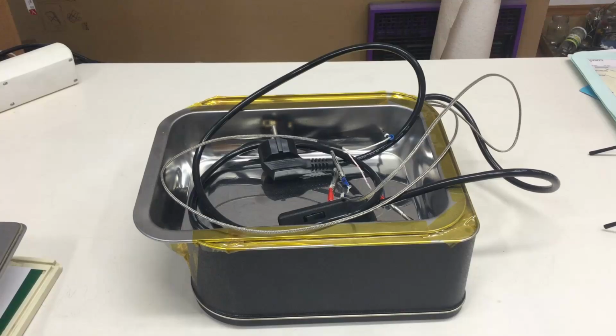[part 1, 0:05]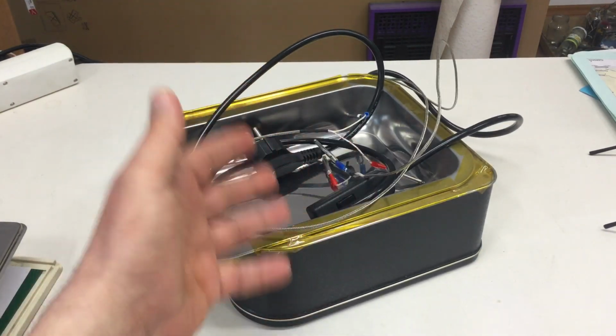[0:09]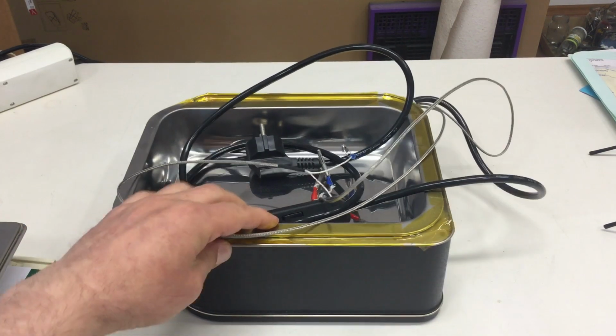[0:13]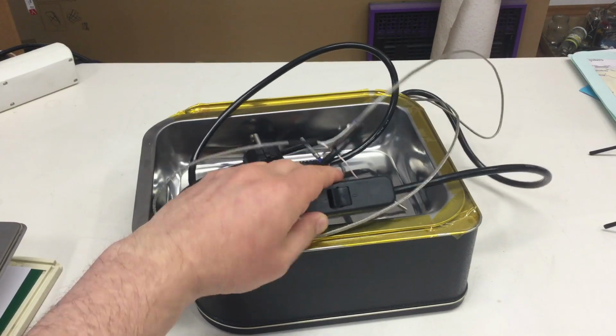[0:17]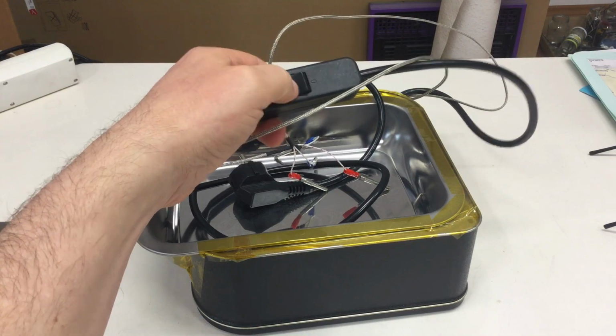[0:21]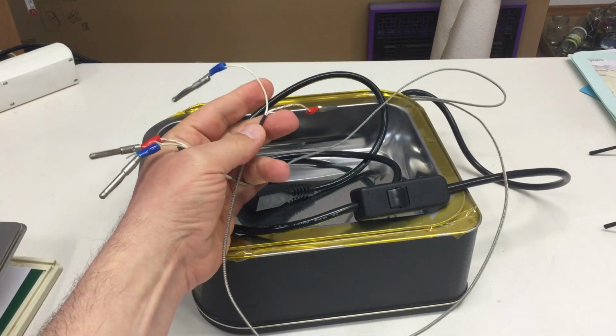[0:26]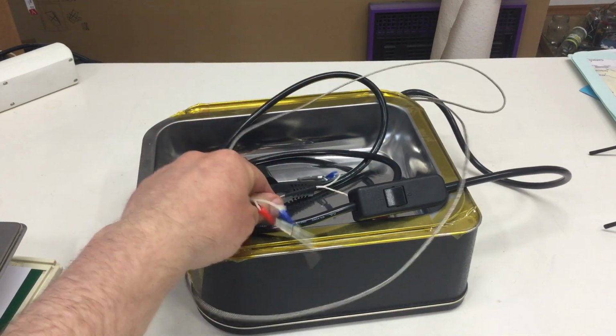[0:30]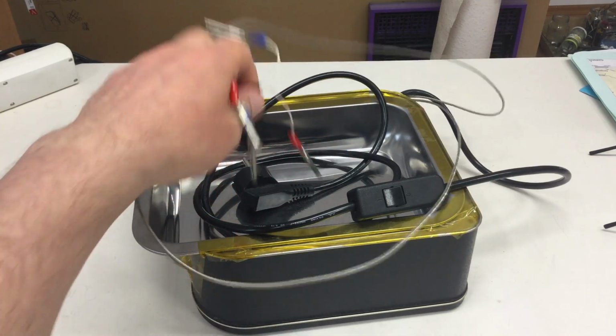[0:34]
I assume you still remember that thing, or you have seen it often enough: the prototype of my laboratory water bath, which I use for etching PCBs. So yeah, precision temperature control and precision temperature measurement with two thermocouples. I used my multimeter to do the temperature measurements.
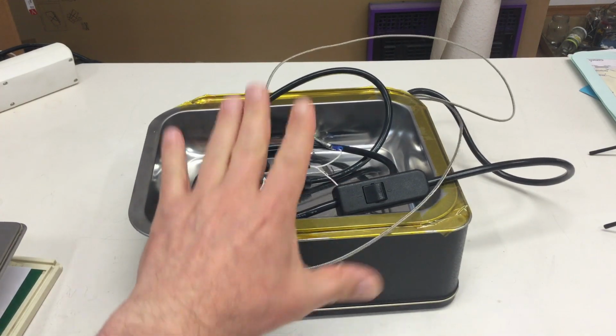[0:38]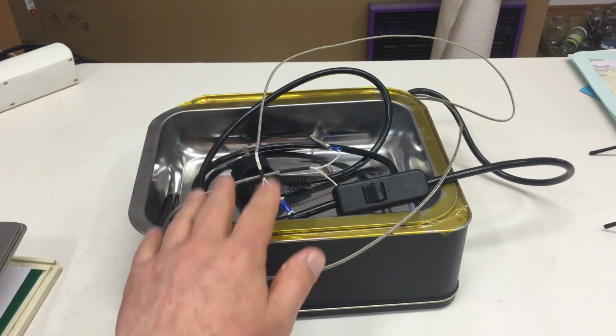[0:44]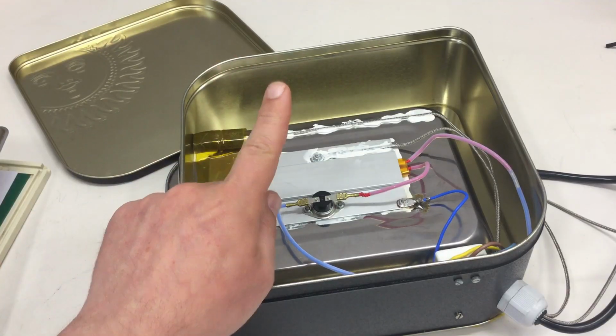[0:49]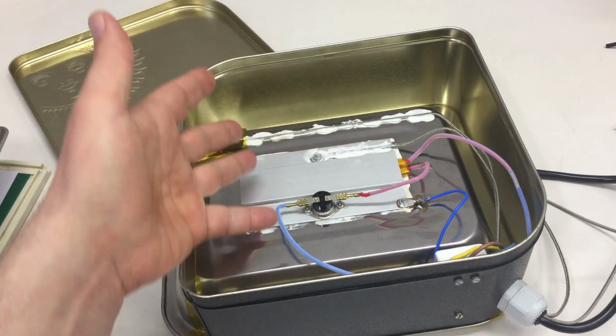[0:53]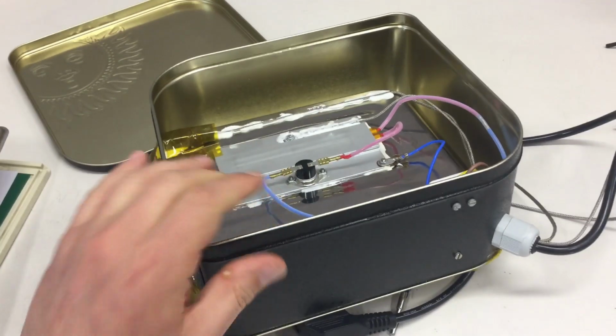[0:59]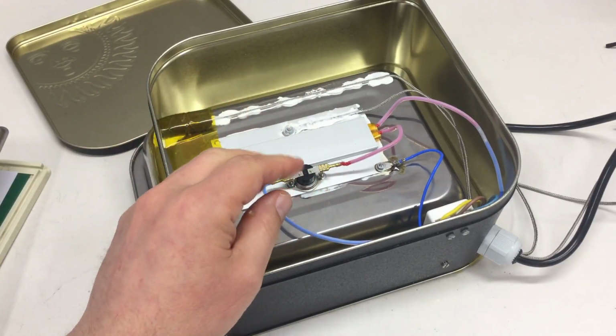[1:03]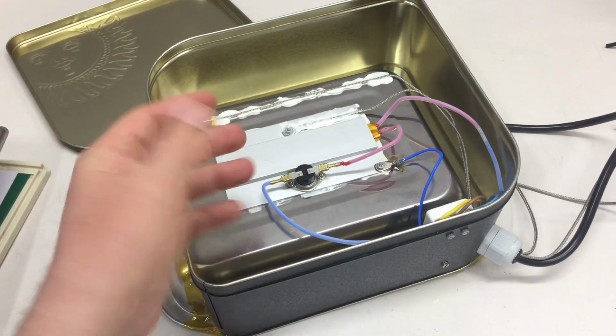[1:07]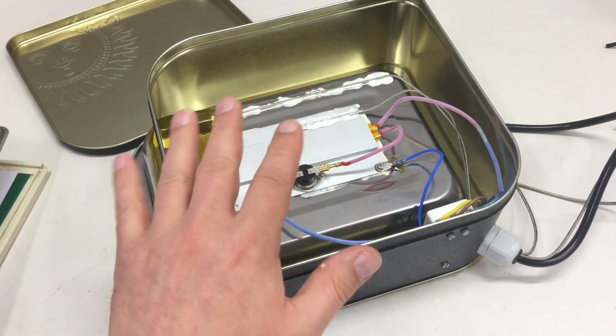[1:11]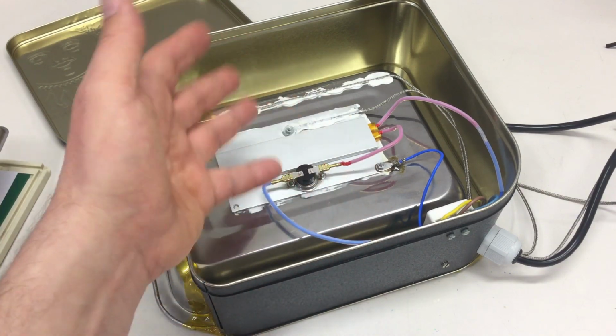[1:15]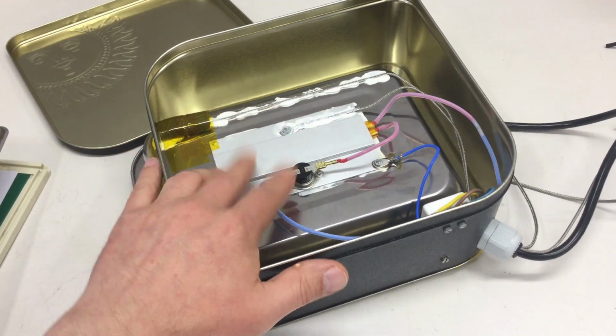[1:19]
Anyway, I used that for a while and it works fine, but I learned a lot of things about it, or at least two things. First, if you run that thing as it's supposed to be run, that is with water in it, the temperature of the heating element and the sensors never goes far beyond 100 degrees Celsius. If I'm just etching stuff and my target temperature is 45 degrees Celsius, they never go up to 60 at most, the one here on the heating element.
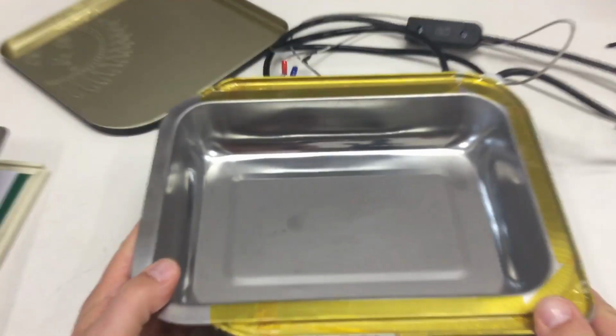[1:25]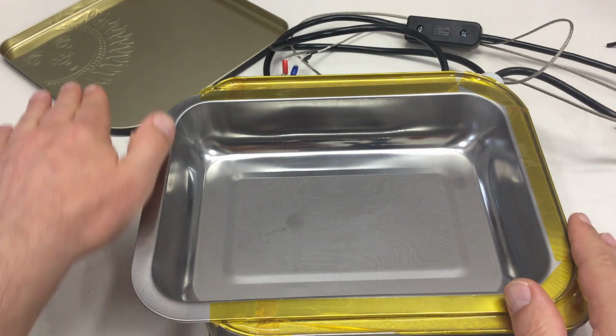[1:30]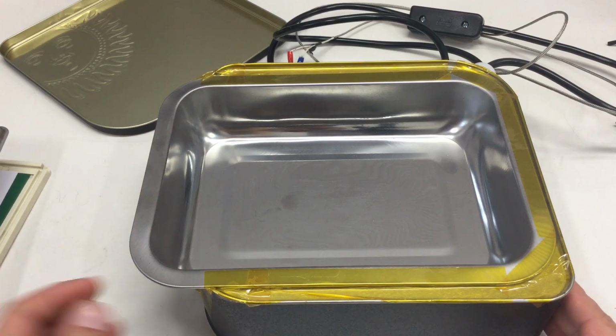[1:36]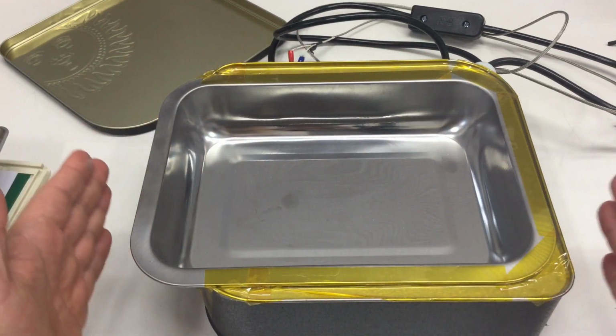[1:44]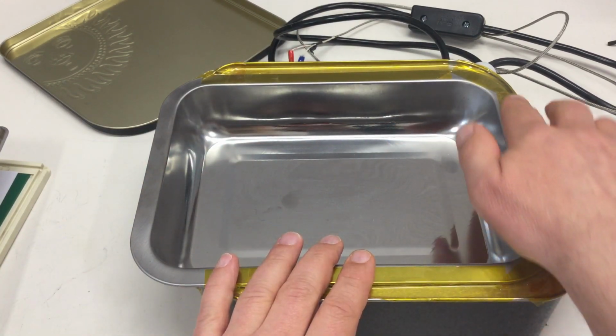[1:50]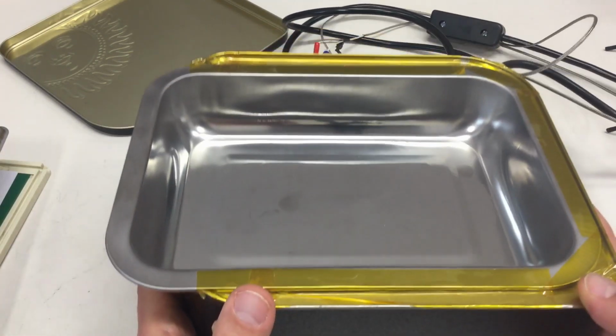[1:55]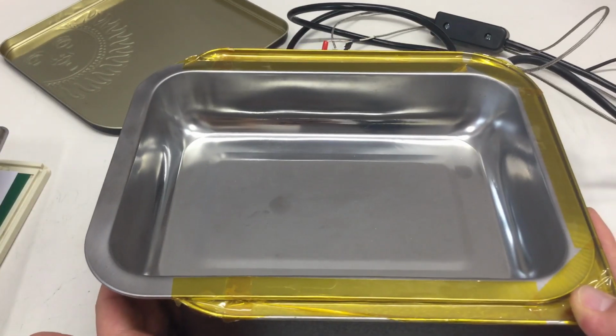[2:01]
Second, for some applications I have in mind, this is a little bit too small, so I want it to be a wee bit larger. And there's a third point. I absolutely want the side here overhanging over the case on all sides. I do not want it to be embedded in any case, because it's so easy to take it over to the sink and at least on that side simply pour it out.
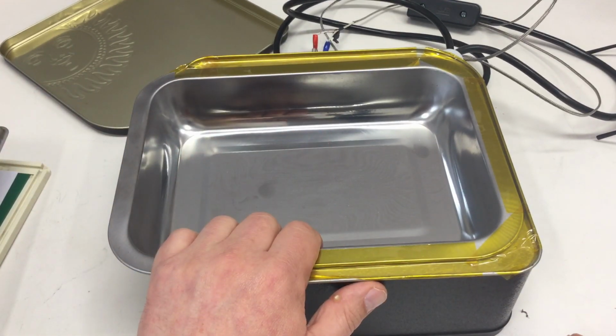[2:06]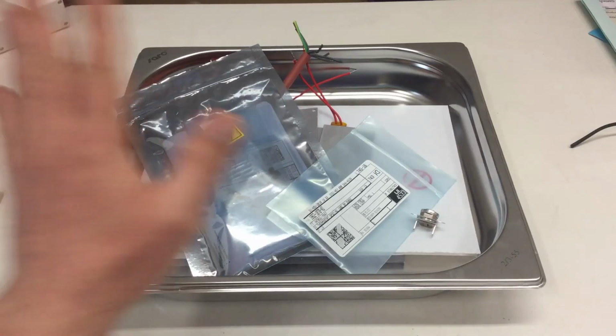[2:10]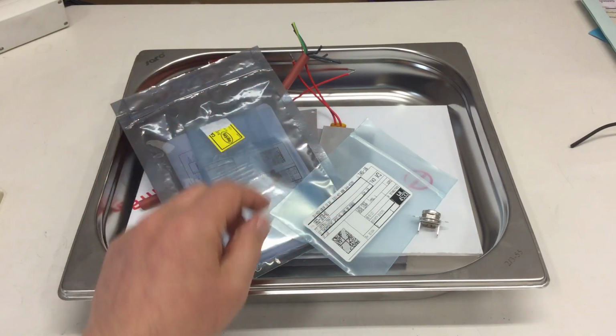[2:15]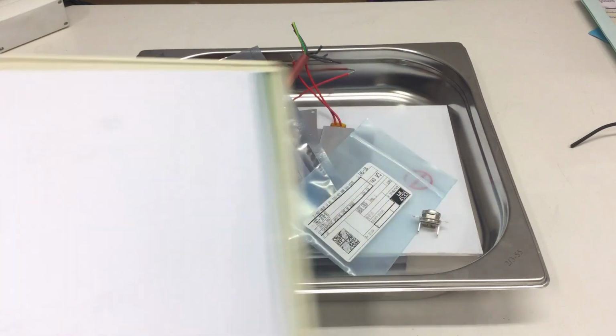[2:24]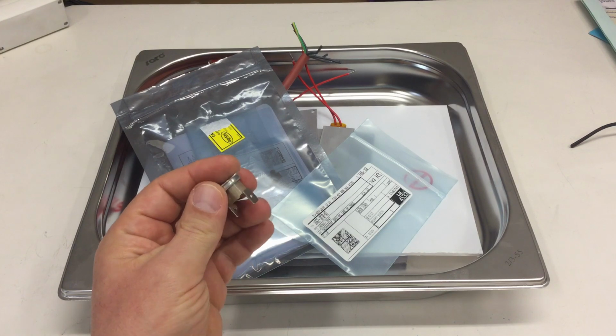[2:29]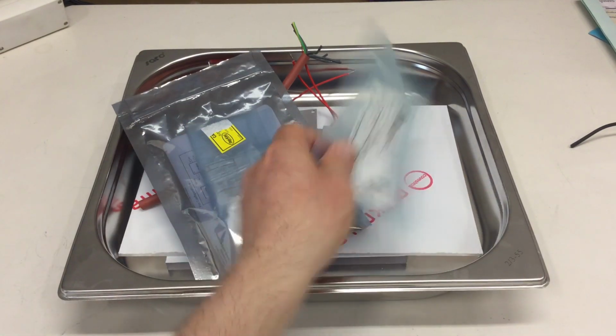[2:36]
So the prototype was well worth it, but now it's time to do the real thing. And I have the parts for it, at least for the hot and wet end. The regulator stuff and display stuff is still in the post. And I have a plan, okay? So, my emergency temperature cutoff will now be of a 120 degrees C type.
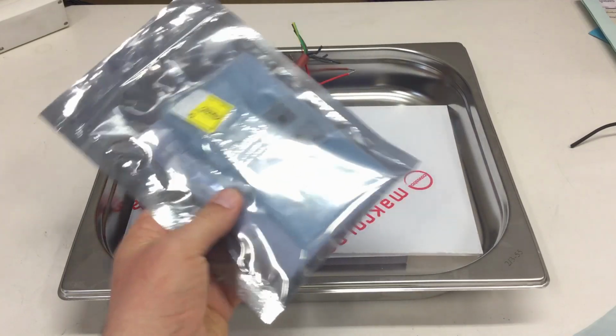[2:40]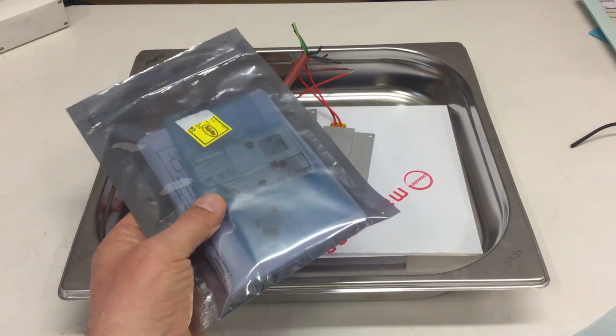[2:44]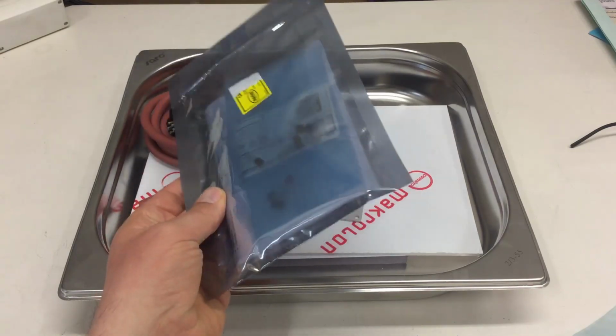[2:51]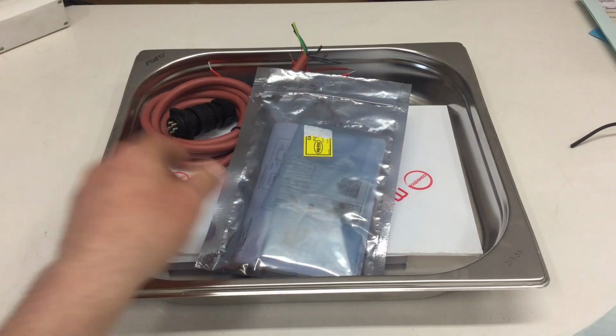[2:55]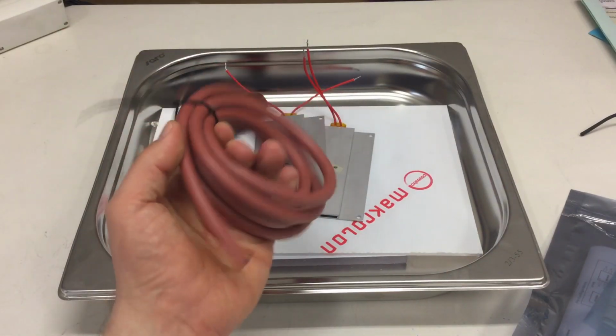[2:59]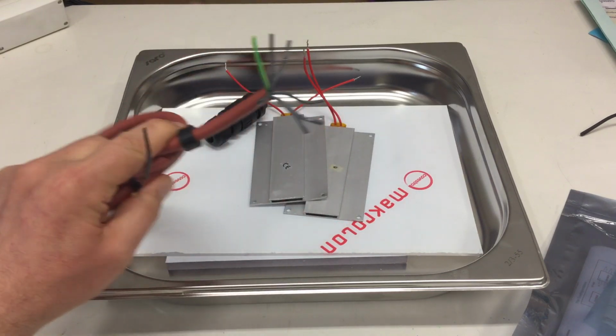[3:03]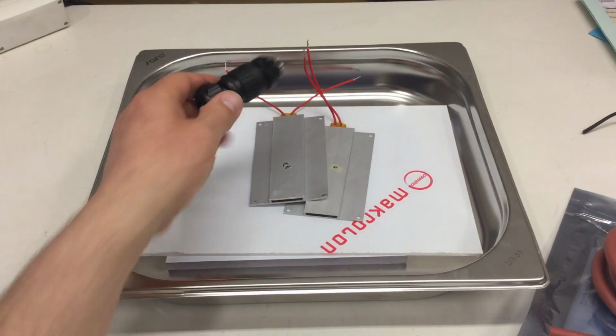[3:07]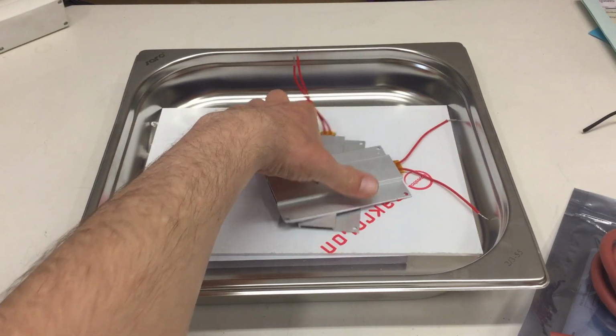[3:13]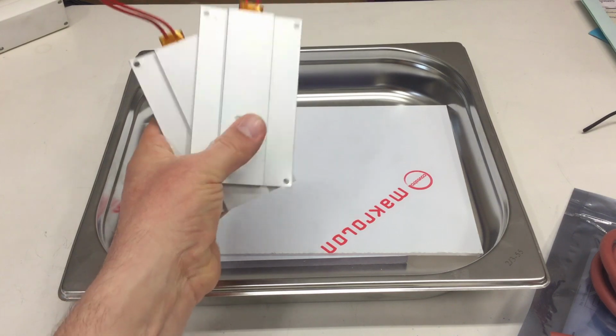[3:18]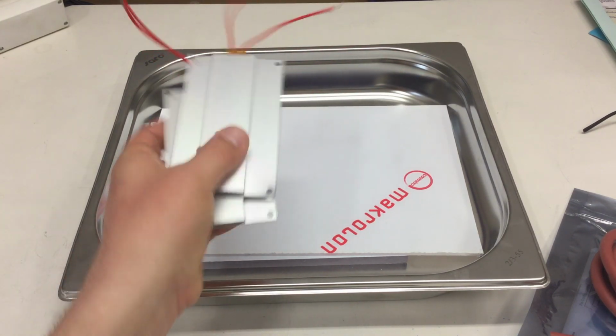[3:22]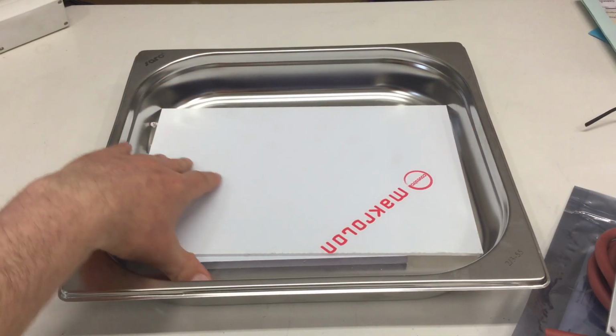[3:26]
The sensors for measuring the temperature of the basin and the temperature of the heating element will now be DS18B20s. I've made a lot of videos about them, card link. And a nice high temperature silicone cable with a lot of wires in it. A watertight connector. Of course, this thing is bigger, so twice as big. So we need two heating elements because we don't want to wait too long for the water to heat up.
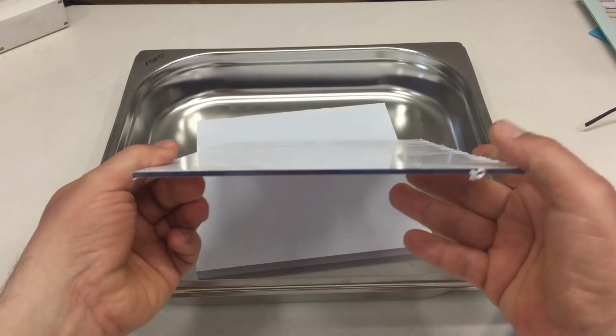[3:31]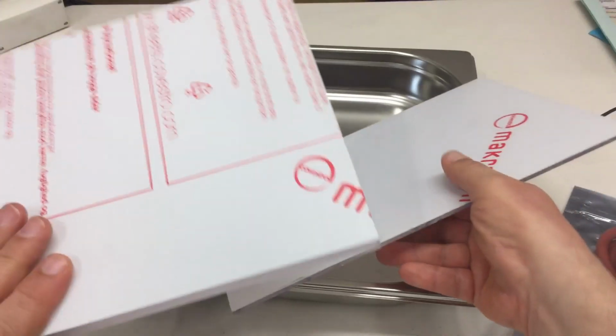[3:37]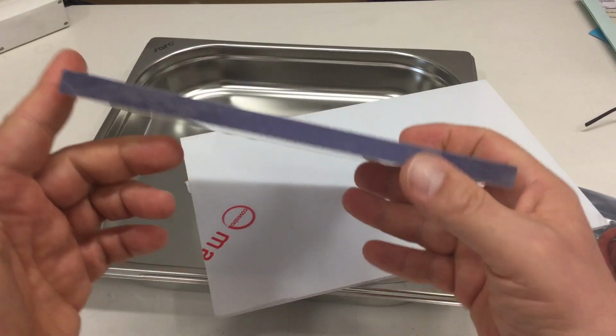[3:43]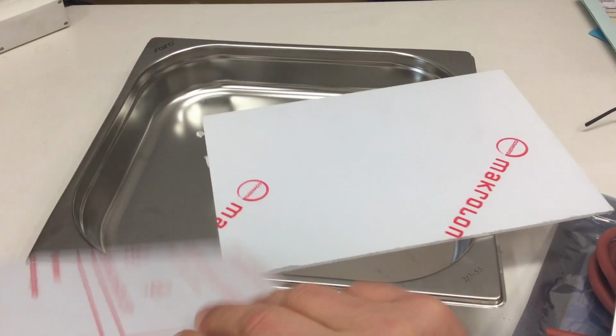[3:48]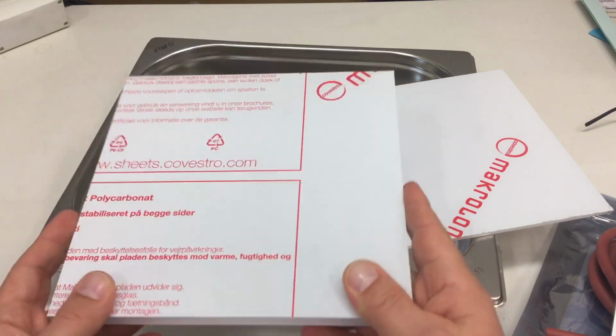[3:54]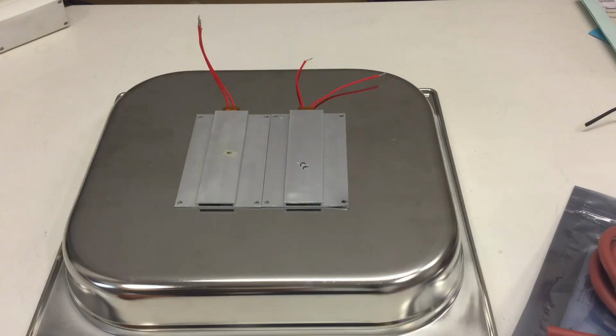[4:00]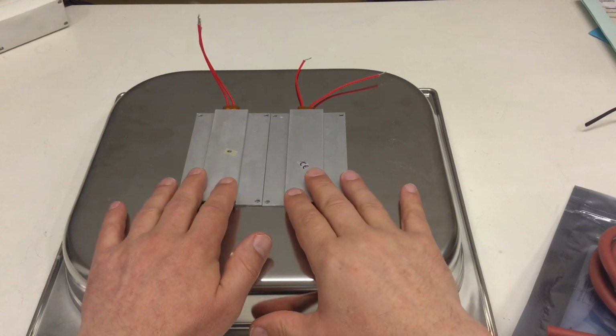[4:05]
And I have here this 3mm Makrolon or polycarbonate sheet, and that's good. Well, it's transparent, that was the cheapest, it's not white, this is just some foil on it, but that is also good up to 125 degrees Celsius. And the reason I have that is the heating elements and the sensors all go on the back, of course, and I needed a case.
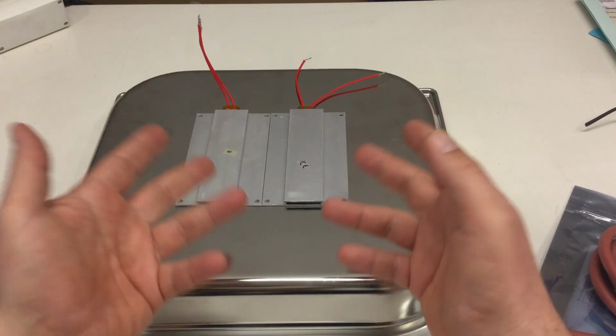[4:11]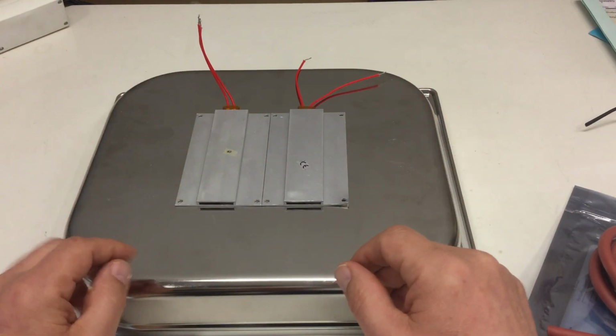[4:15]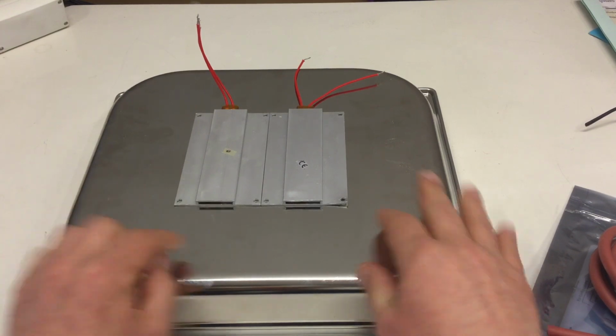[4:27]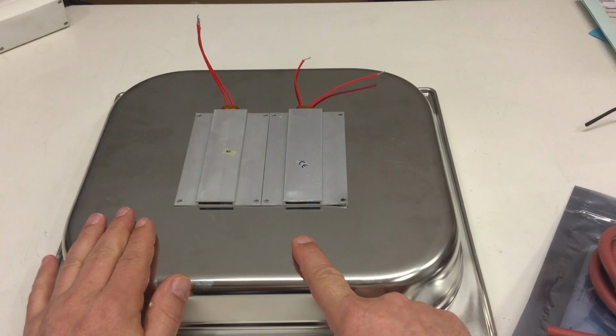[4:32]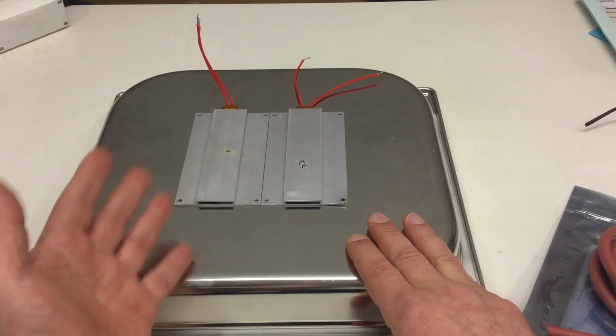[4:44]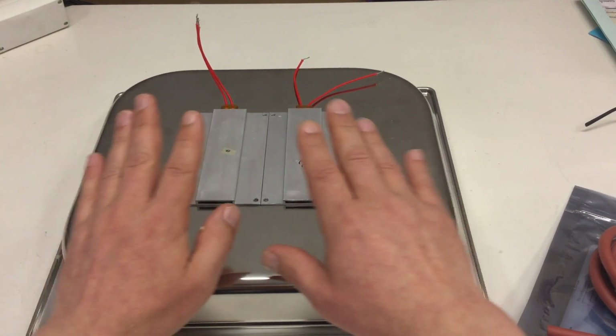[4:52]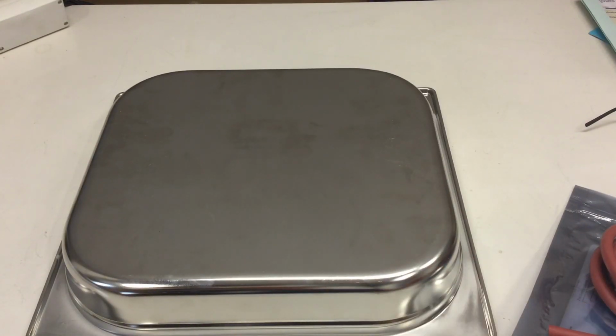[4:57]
My first idea was simply to buy a case and take one half, glue it somehow on, but I ran into problems. I only got cases which had the right size but were far too high, or I got cases which had almost the right size but were of ABS plastic or something like that, which doesn't withstand temperatures up to 125 degrees C, or not even, you shouldn't use it even up to 100 degrees C. So that was out of the question. Buying a case, that is.
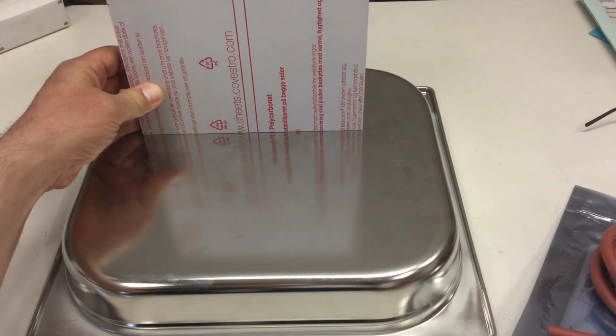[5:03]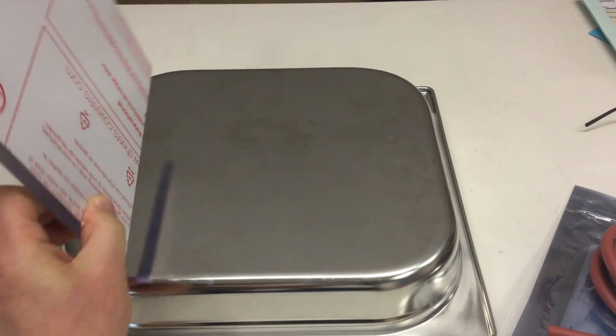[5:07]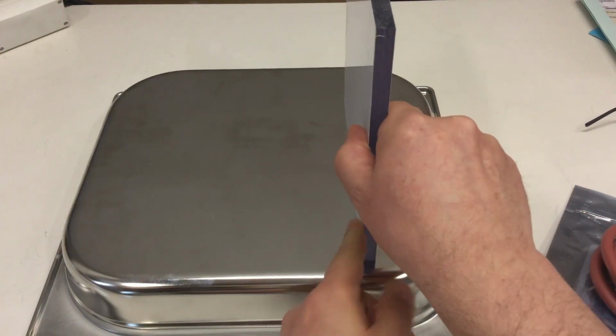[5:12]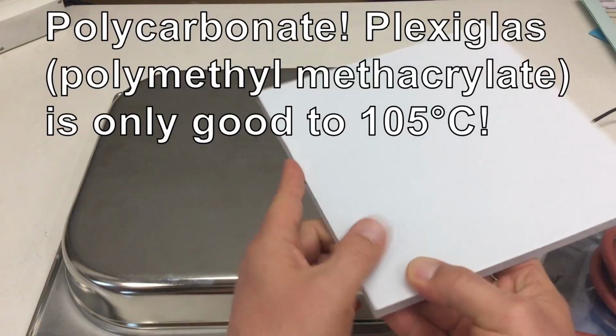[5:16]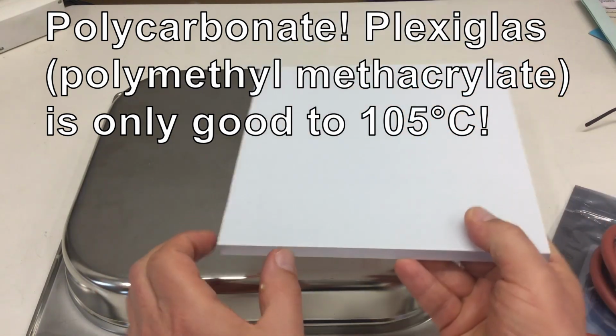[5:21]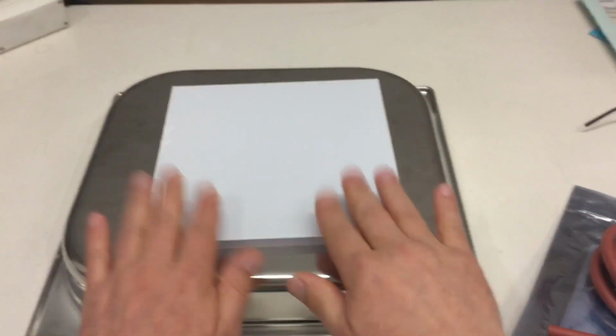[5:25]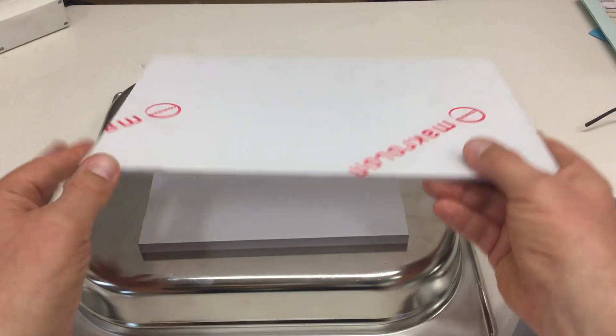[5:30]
So now the idea is to have 20 centimeter by 22 centimeter walls going up here, made out of that stuff, plexiglass or whatever. And obviously not that high, just about 4 centimeters. We have a look at the plan. And then cover it up with a 3 millimeter sheet of that stuff.
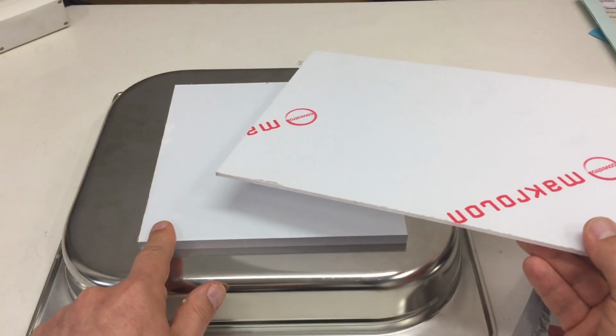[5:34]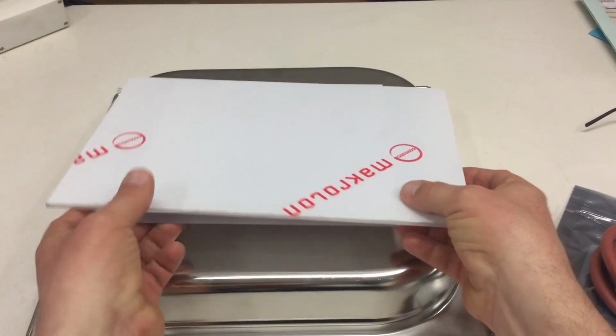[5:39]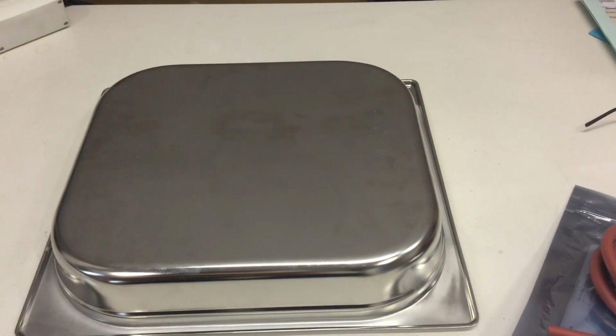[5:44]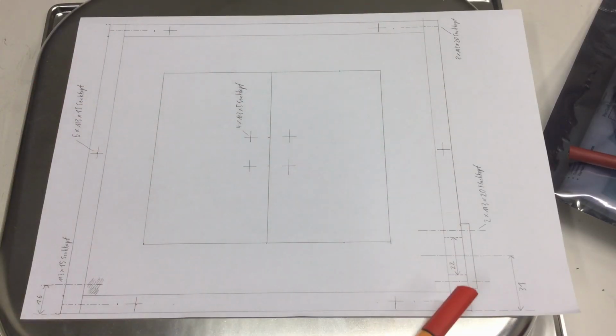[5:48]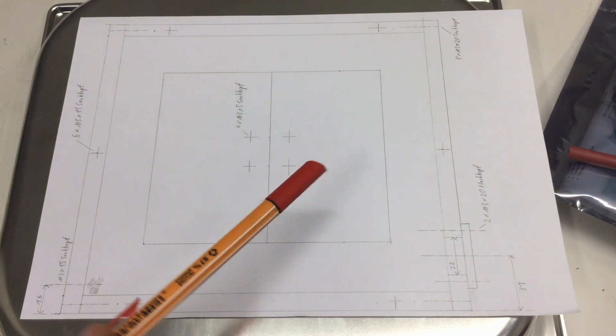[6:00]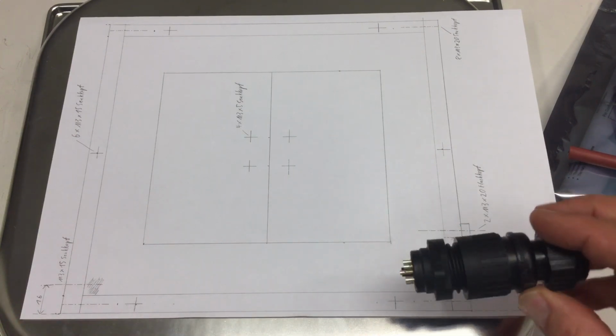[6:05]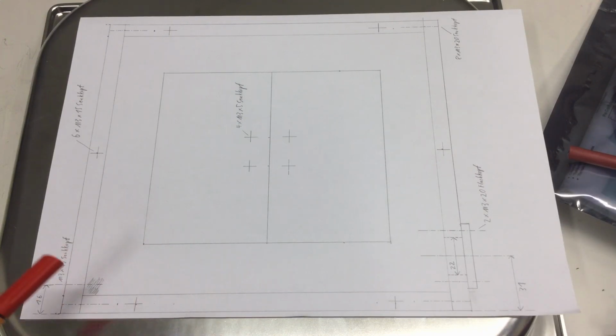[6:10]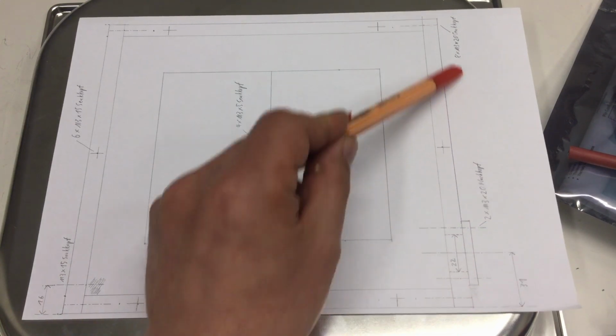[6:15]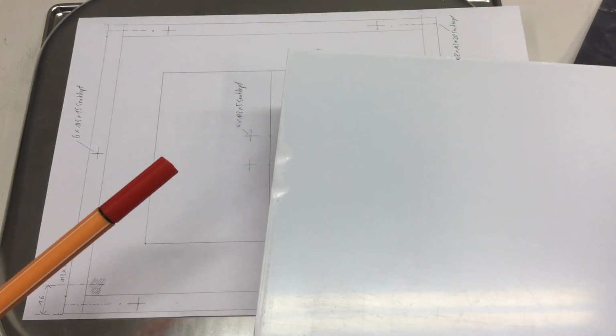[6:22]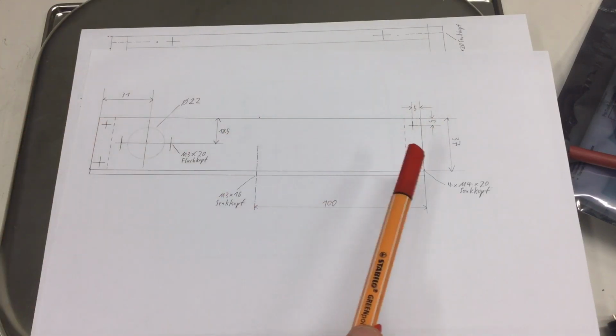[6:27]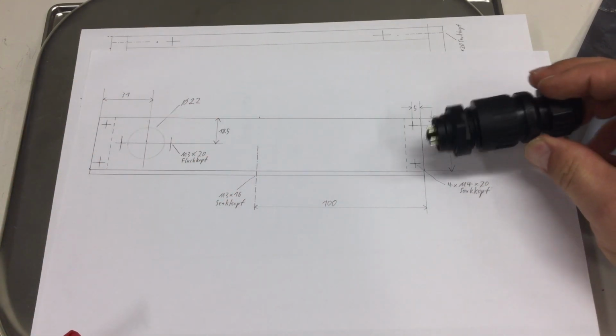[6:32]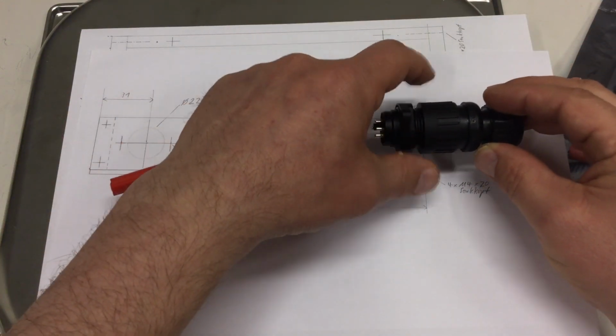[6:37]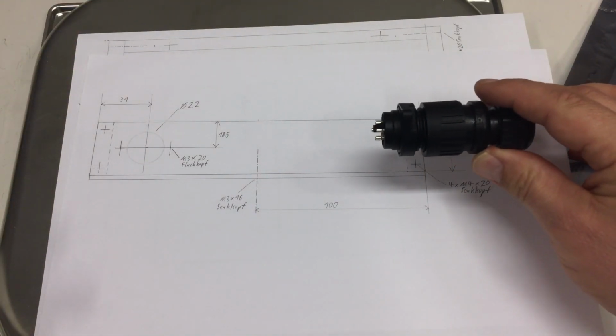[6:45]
Okay, first I will have to saw that plate here, the 10 millimeter plate, into pieces. And the pieces should be 37 millimeters wide. This will give me, when that thing here is basically in, 5 millimeter wiggle room to the top and the bottom. So nothing will bind up when you plug it in actually.
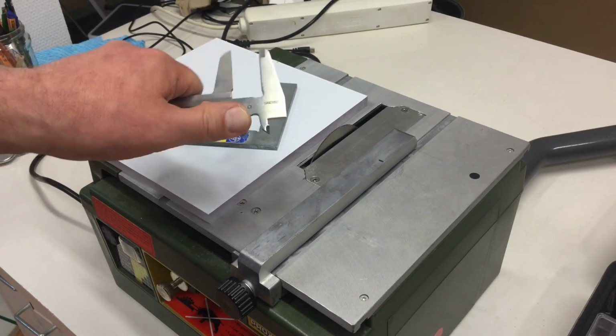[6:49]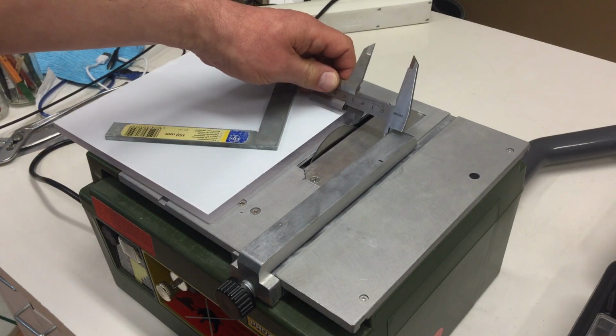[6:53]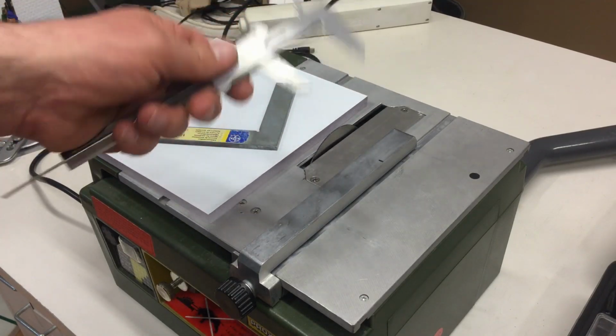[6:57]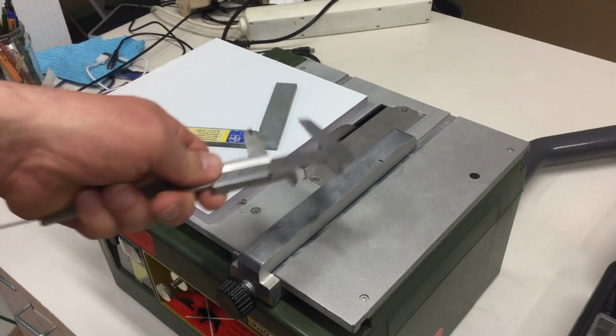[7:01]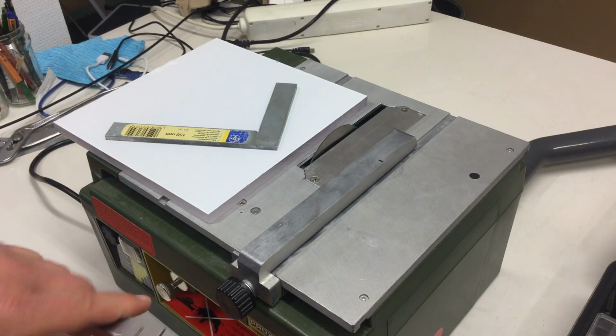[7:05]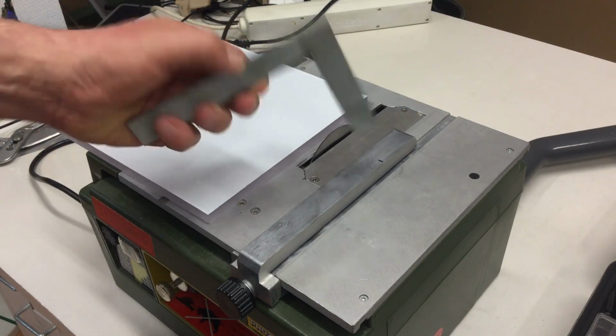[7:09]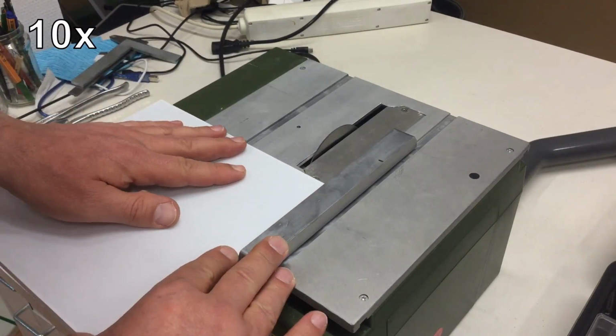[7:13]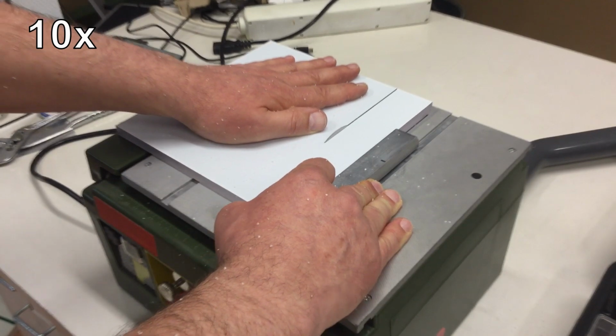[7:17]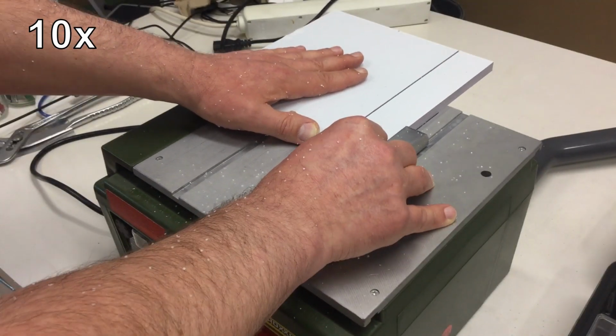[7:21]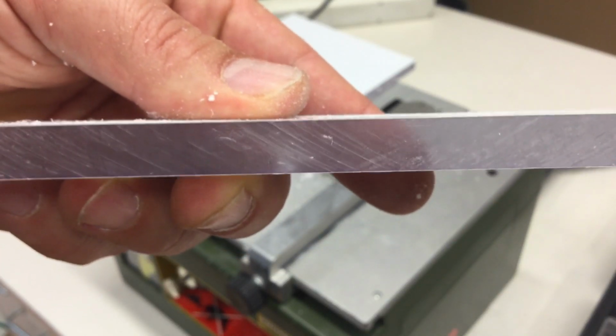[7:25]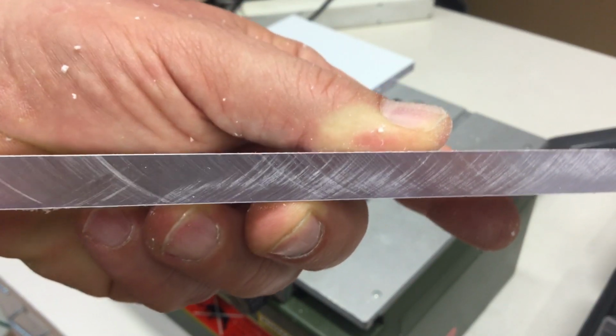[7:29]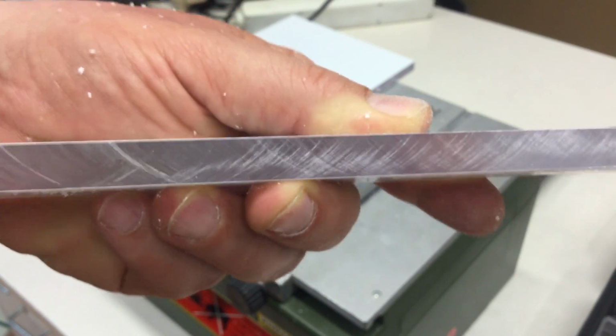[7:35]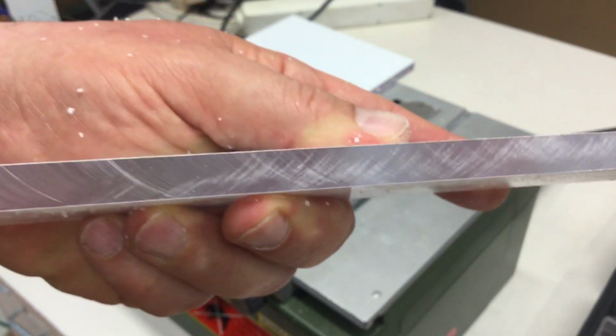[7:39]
Let's get started. I measured 37.2 between the saw blade and the fence at 2 points, and these 0.2 millimeters are just insurance for my own inability to make straight cuts. But I also checked that my fence and my blade and everything is at a right angle. So let's rock and roll. That's the cut from the factory, and that's my first cut. Not too bad. I could let the blade run a little bit slower, but I won't change anything now because I need 4 identical pieces.
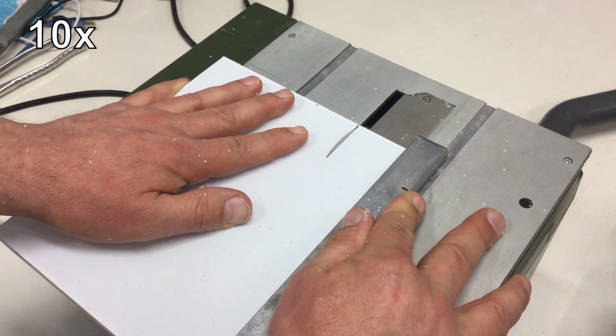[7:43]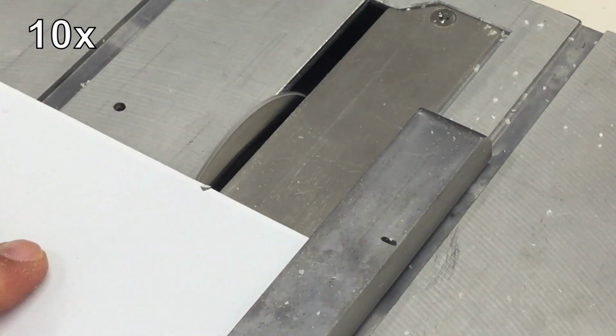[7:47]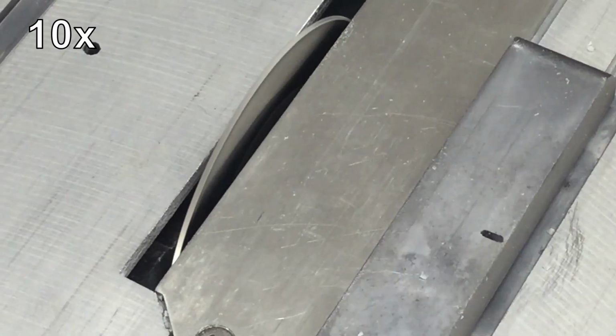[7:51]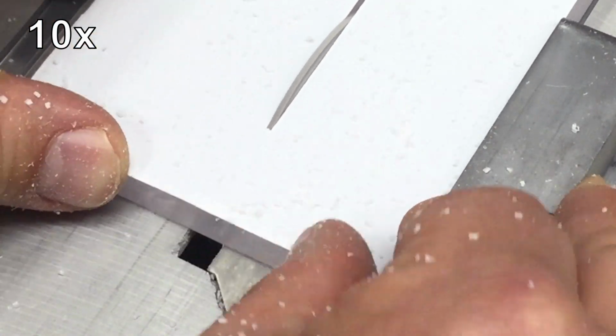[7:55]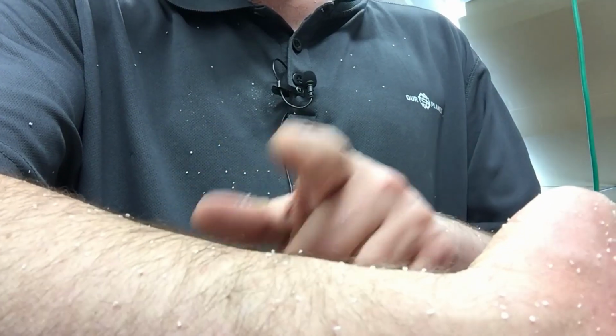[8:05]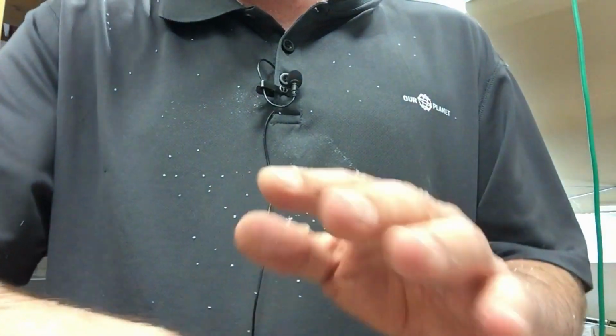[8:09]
Yeah, I'm full of that stuff now, and would you believe, these particles, when they come off the saw, flying off the saw, they are actually hot. I mean, not burning hot, but yeah, uncomfortably hot. Yeah, anyway, let's
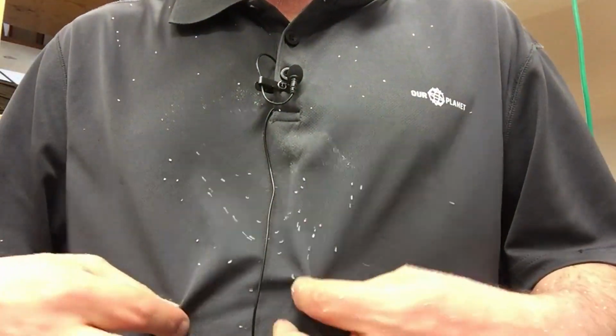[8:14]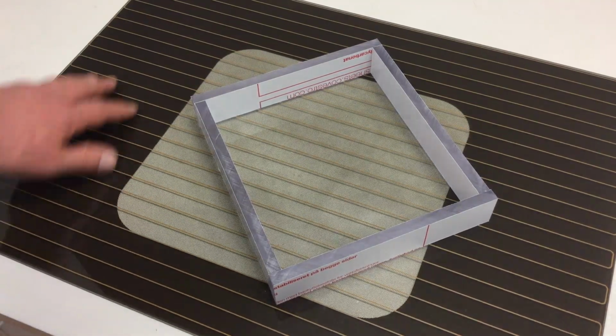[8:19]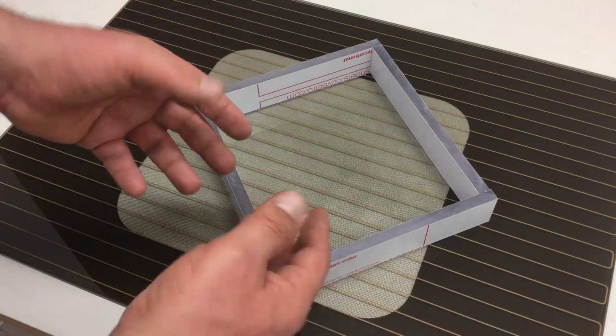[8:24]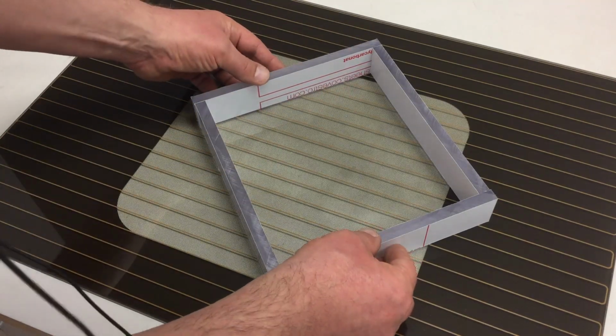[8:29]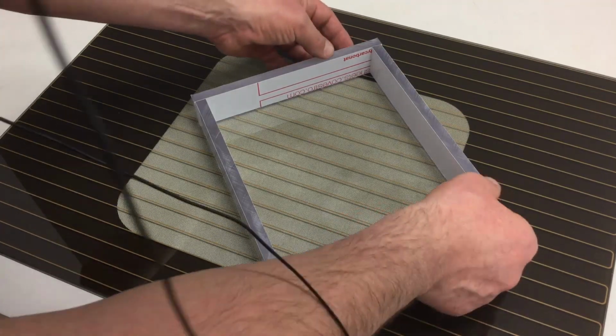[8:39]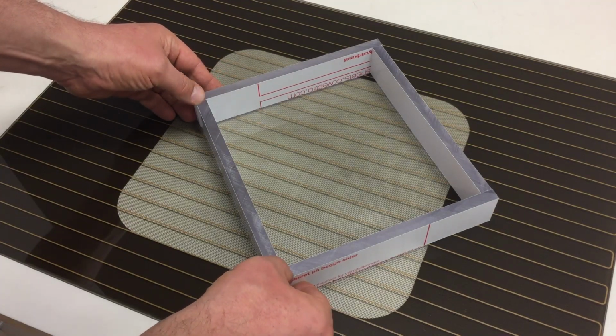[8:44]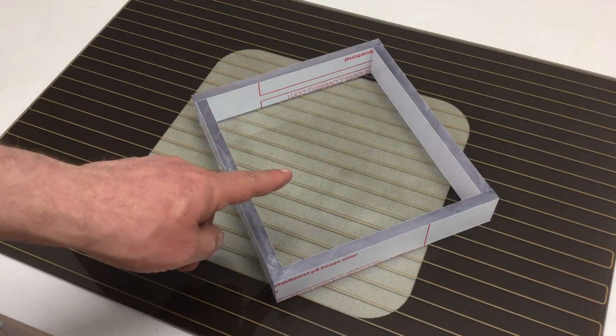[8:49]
clean up. This glass plate here is the flattest surface I have, and if you search for something flatter, you're on the wrong channel, obviously. For now. And yeah, it turned out, well, I wouldn't say perfect, but yeah, this is absolutely smooth. Okay, next step.
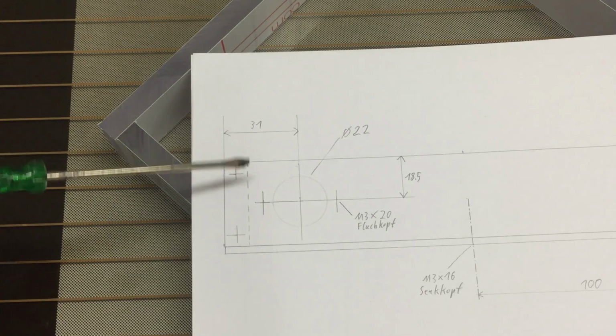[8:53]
Yeah, I had a plan. Where is it? Yeah, I need 2 holes going in here, and then in the inner part tapped for M3. And yeah, in addition, I will add some glue when I put everything together. But I wanted to have here some nice positive connection, yeah, within the 4 parts of the frame. So yeah, let me think about a setup, because I want to drill the holes in one go, if possible.
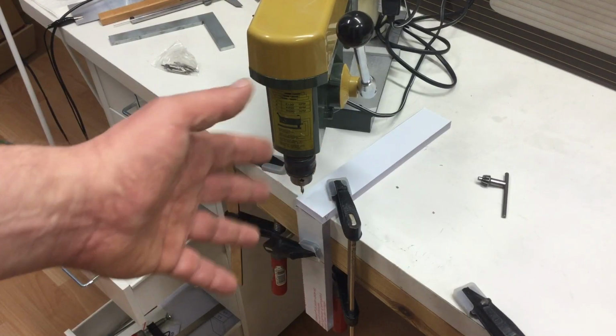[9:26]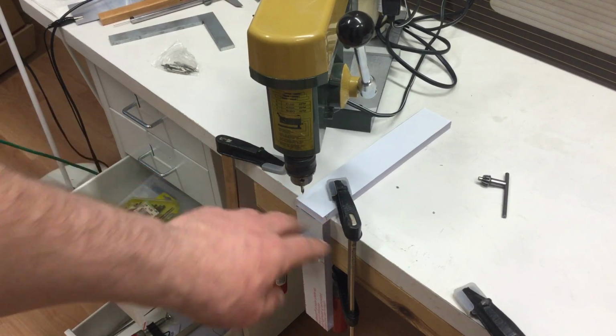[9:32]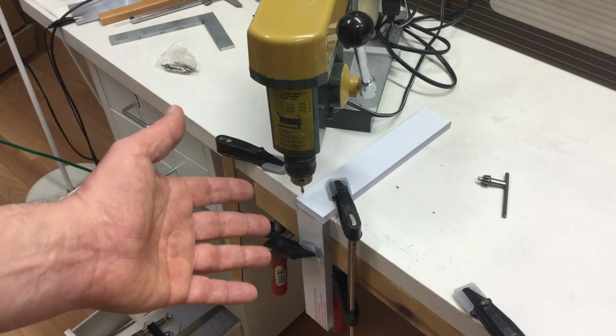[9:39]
I spent the better half of an hour to come up with this contraption to align them here in all 3 dimensions to a right angle, and I hope, yeah, it will work out. Wish me luck.
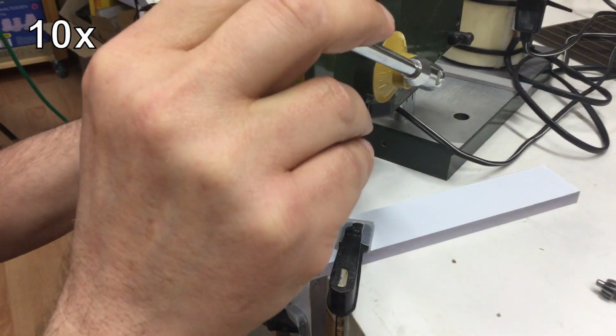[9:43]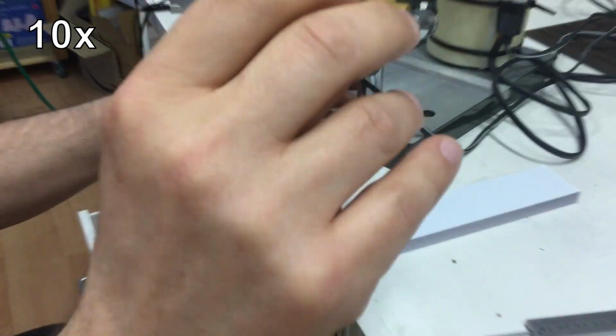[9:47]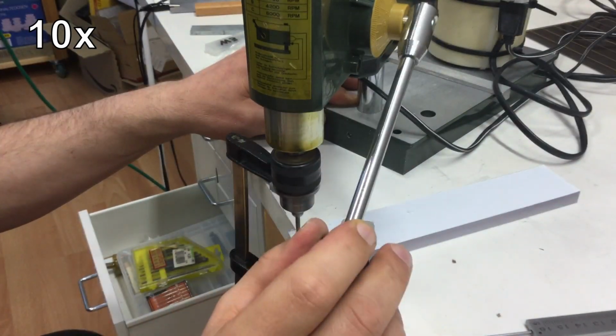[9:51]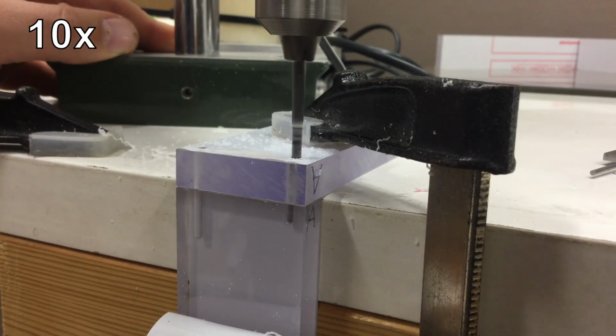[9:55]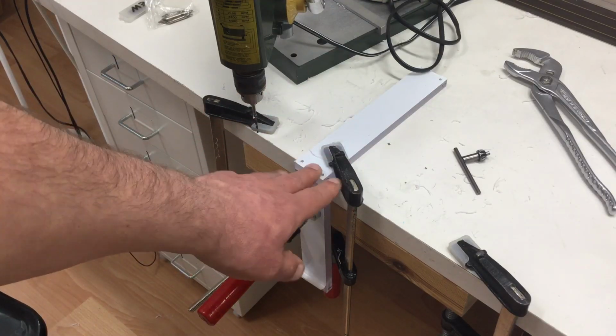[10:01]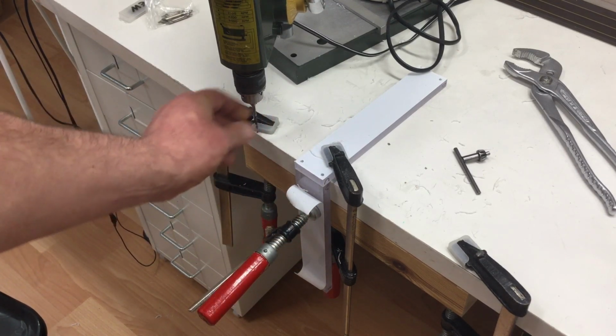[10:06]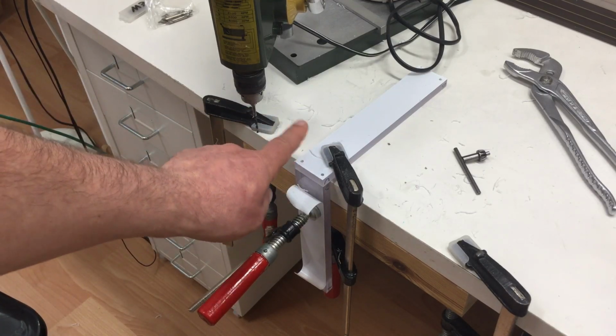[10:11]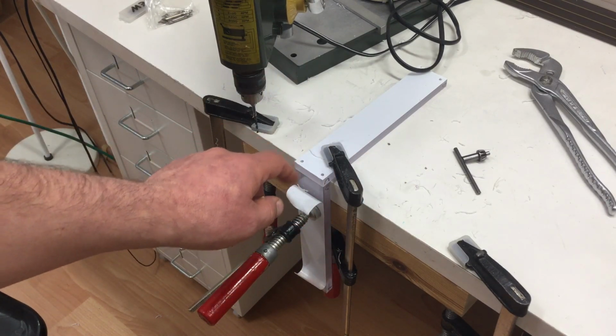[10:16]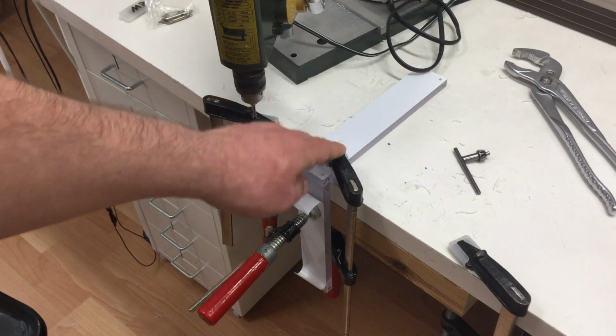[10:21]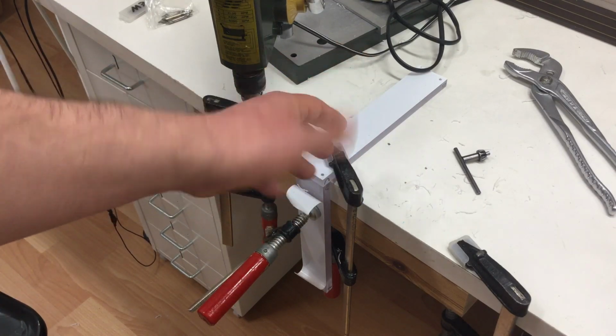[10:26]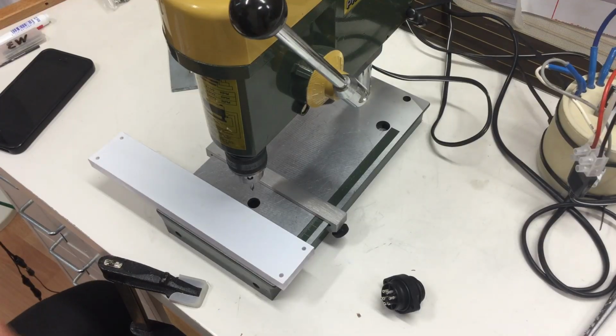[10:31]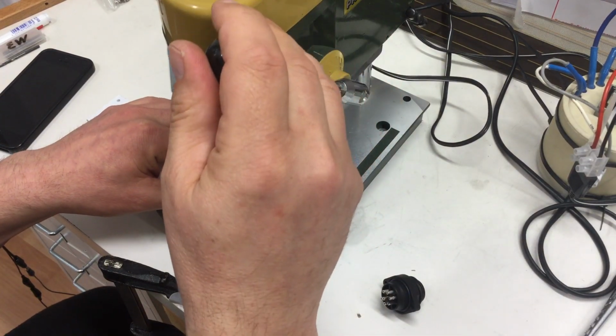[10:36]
All 8 holes on all 4 sides are done, and yeah, initially I drilled now with a drill bit for, yeah, M3 thread core, so I have to widen the outer holes to 3 millimeters and, yeah, countersink them, and we need to add the big holes here, or yeah, one big hole for the connector and maybe some more holes for other stuff. Let's continue. Let's try the big hole for the connector next.
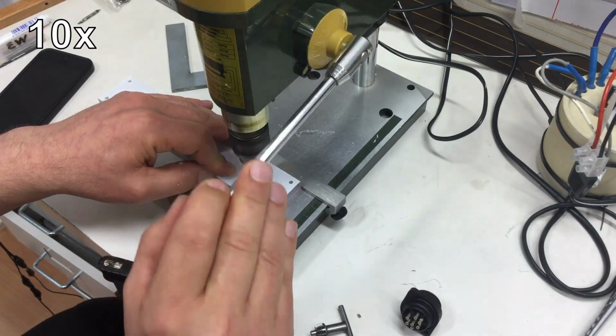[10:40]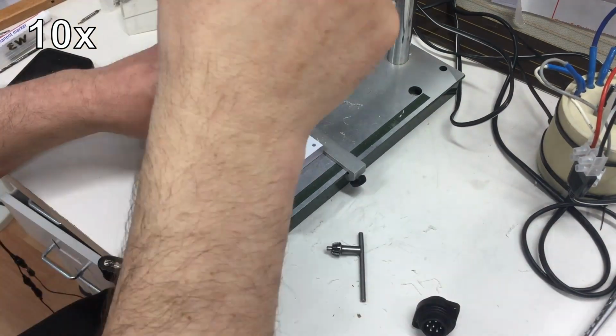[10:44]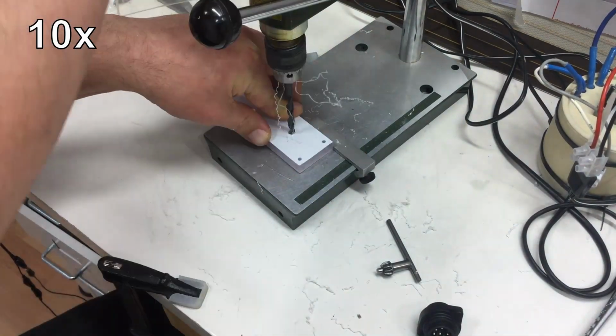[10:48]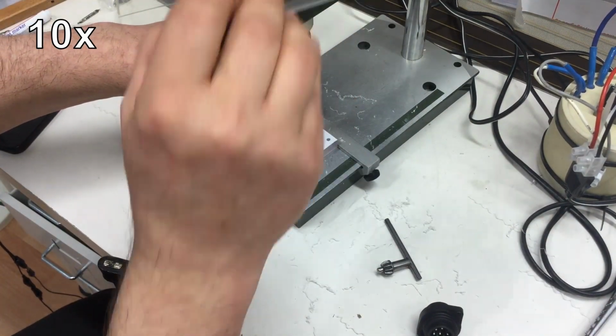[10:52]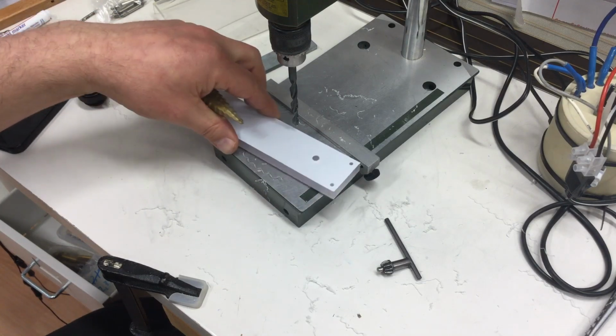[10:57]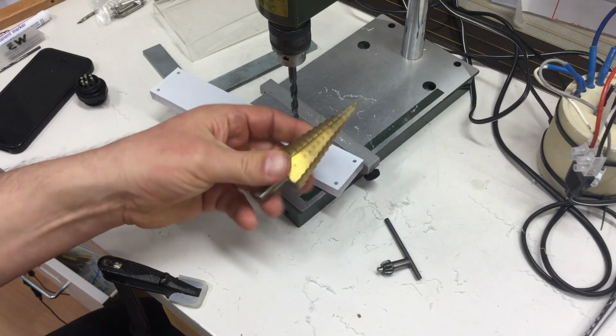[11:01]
I worked up my way to 6 millimeters, and that's the most I can do with that thing. So now, yeah, the big guns.
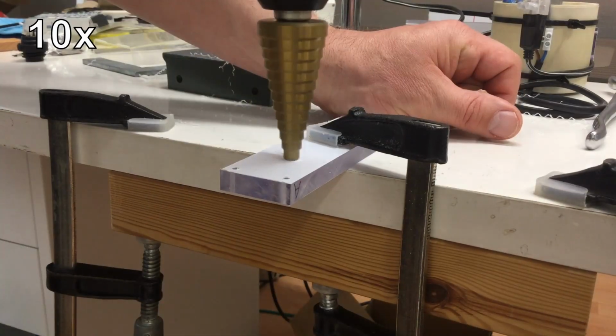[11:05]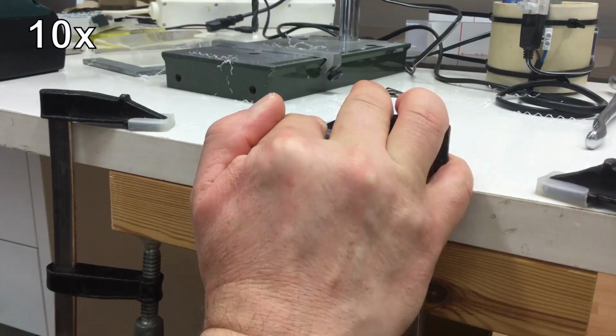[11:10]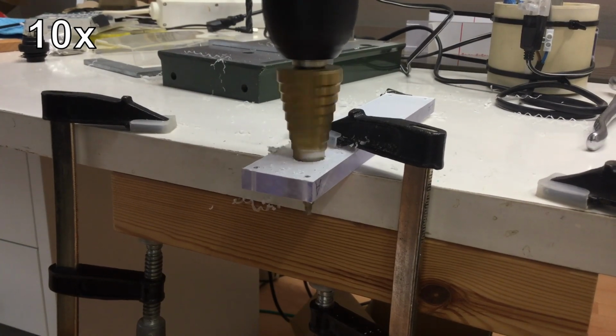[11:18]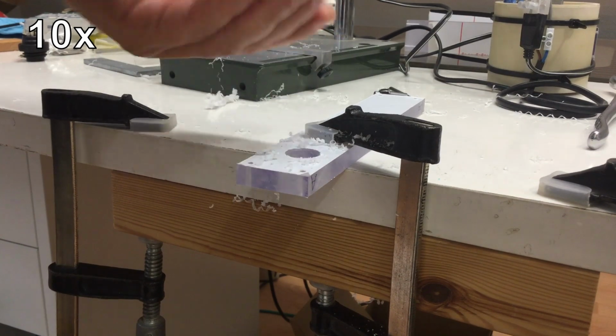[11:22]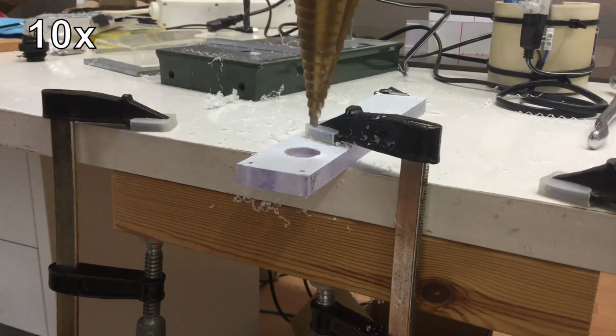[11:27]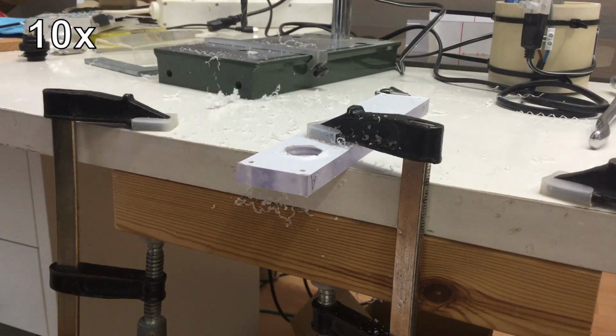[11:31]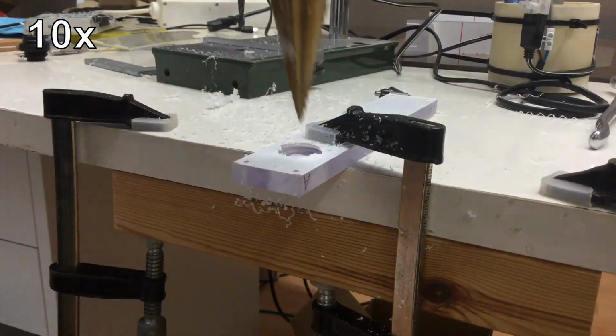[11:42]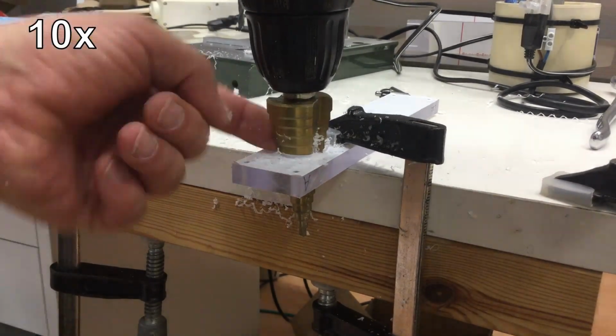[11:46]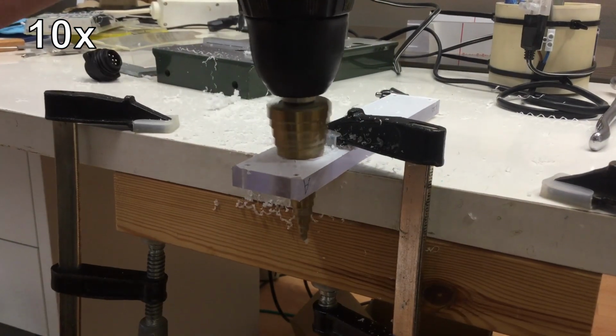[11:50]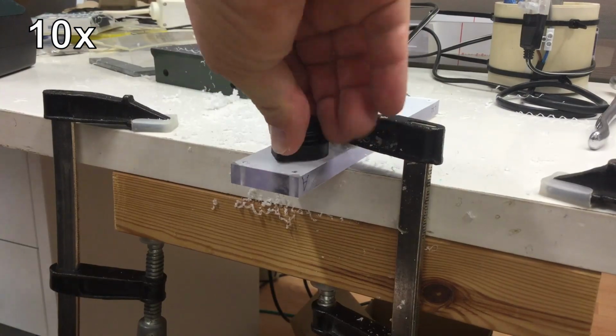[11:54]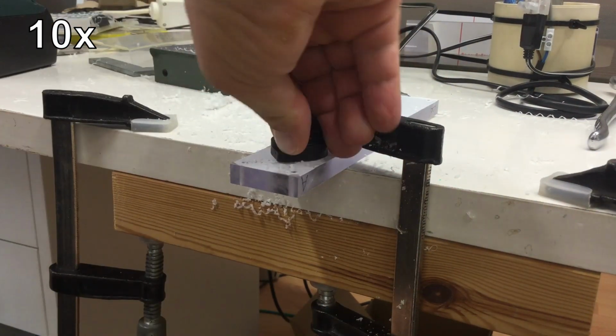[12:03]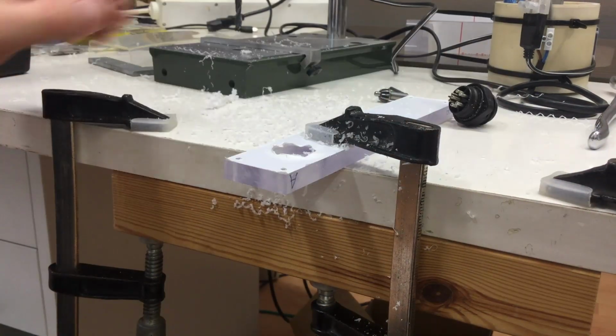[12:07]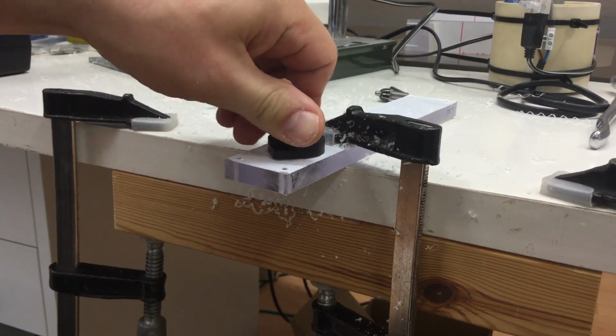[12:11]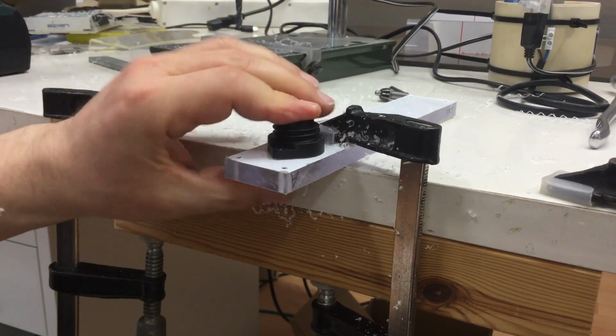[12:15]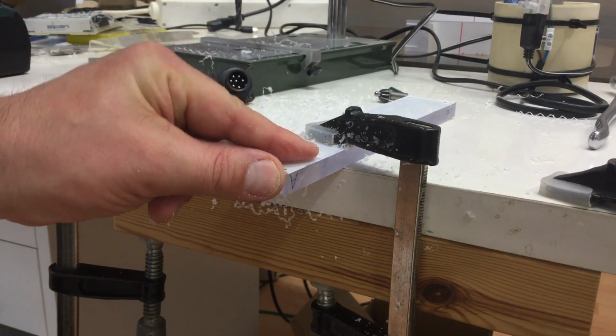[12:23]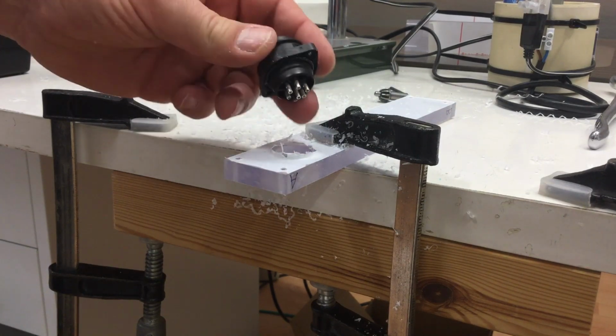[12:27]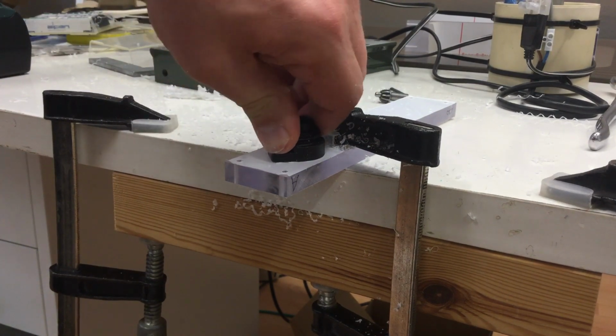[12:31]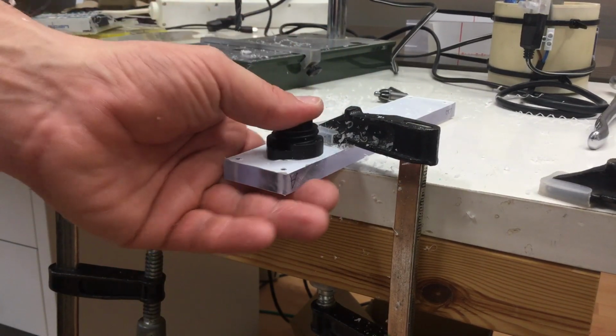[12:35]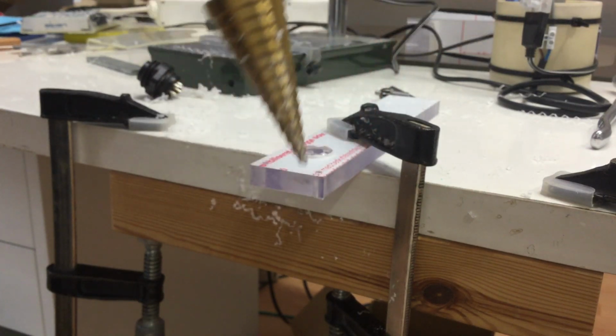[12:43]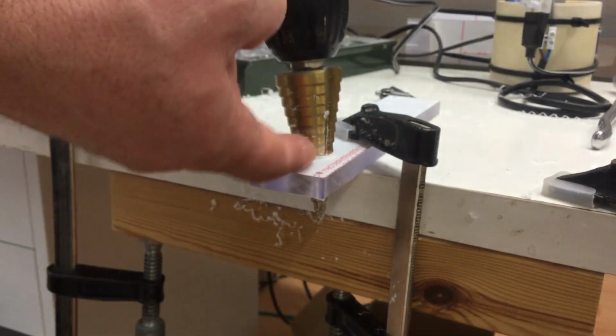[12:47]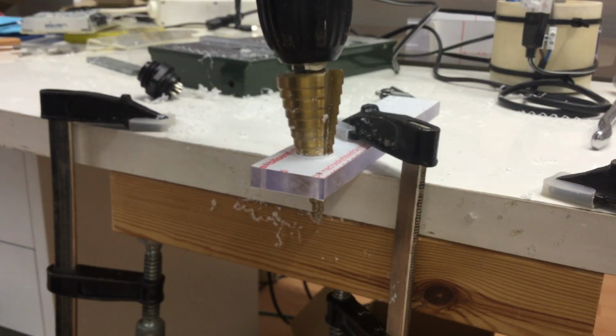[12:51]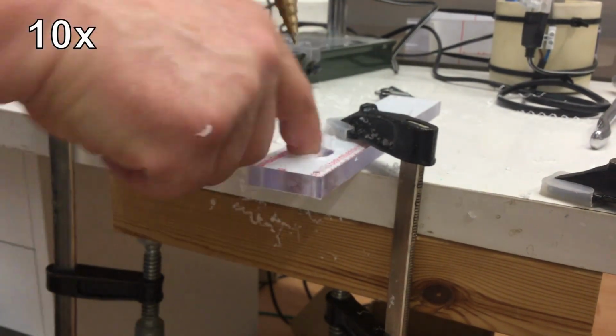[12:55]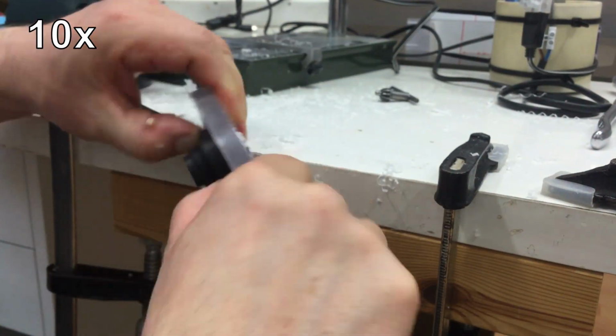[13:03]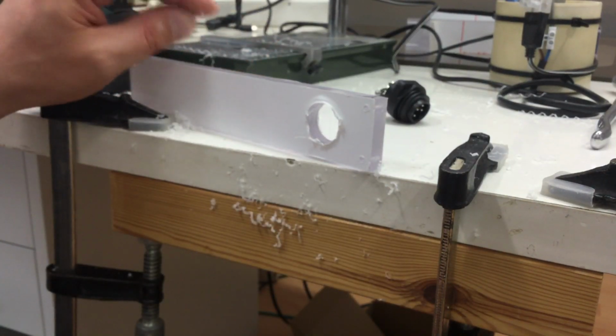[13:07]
So that seems to be fine now, but I guess I will, yeah, go in from the other side too a little bit, just to make sure I have enough, yeah, space here. You will see in a moment. You see, because, yeah, it's a pyramid, my diameter on the inner side is still a little bit small. That's it.
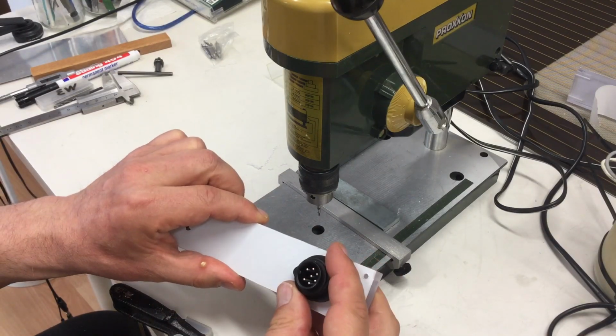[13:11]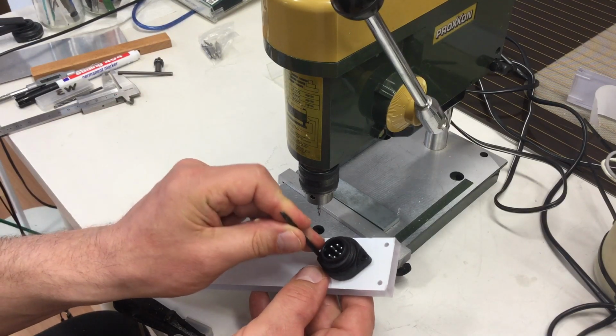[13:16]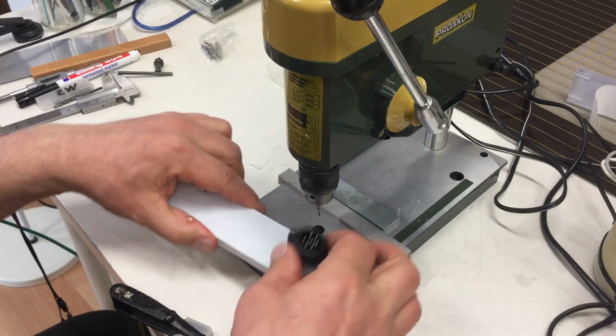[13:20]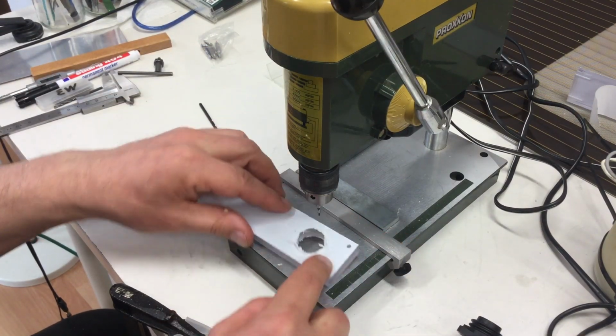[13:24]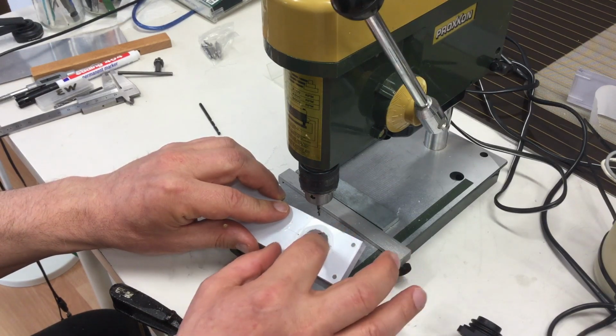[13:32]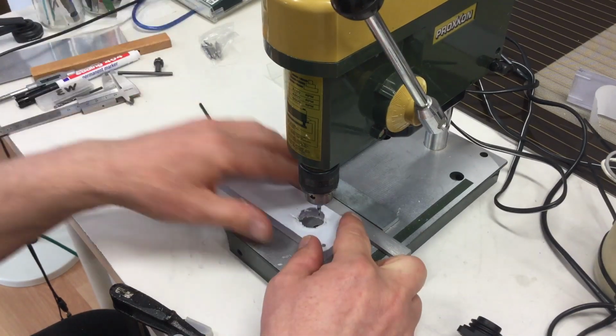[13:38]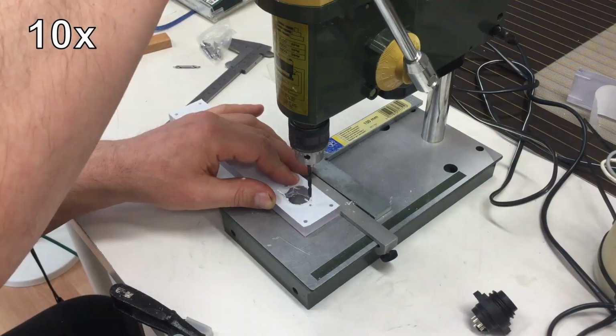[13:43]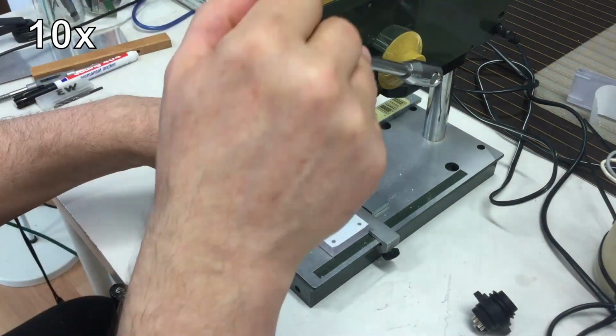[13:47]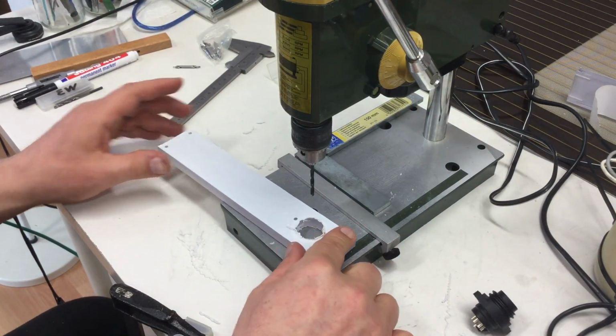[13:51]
I marked the holes here for the screws to hold the connector in with a little bit, yeah, oversized drill bit, and yeah, now I have to drill them. That was the reason I didn't mark them in the first place and pre-drilled them together with the big hole, because yeah, I feared the big hole might wander a little bit and then, yeah, my holes would be off. So anyway. Yeah, might as well do the other 3 millimeter holes too.
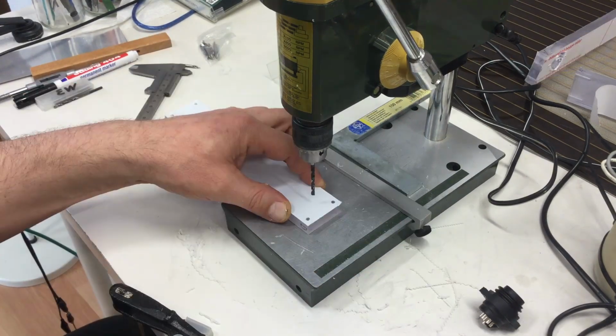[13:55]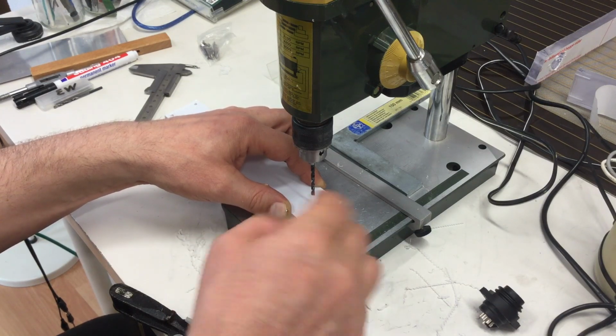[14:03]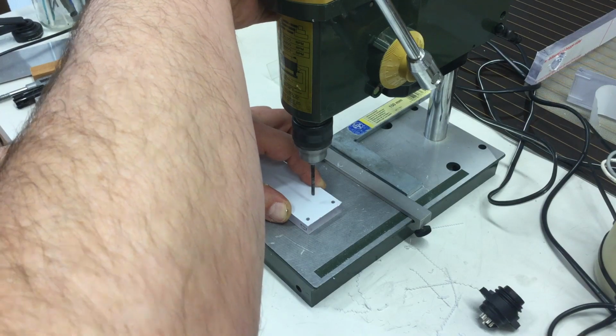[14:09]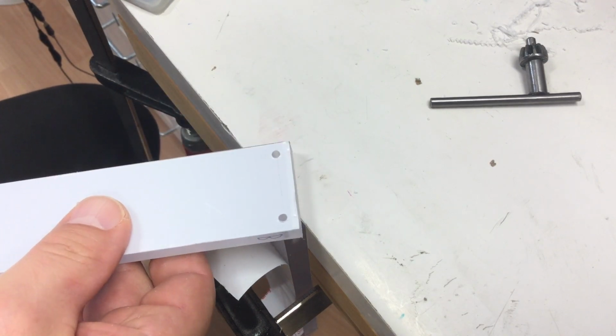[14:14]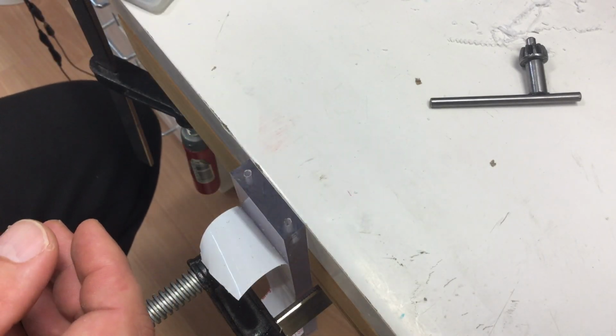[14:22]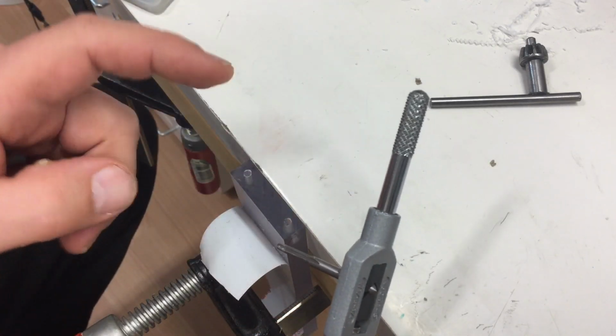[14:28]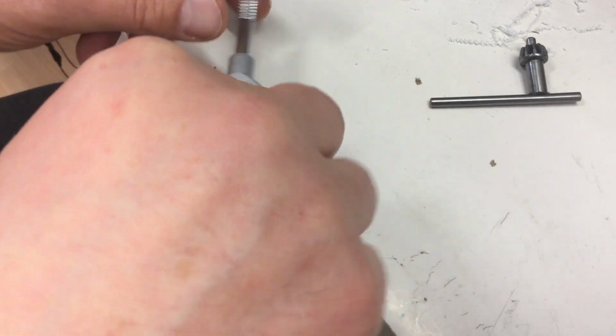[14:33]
I won't film that. There's one additional hole on the other part, which I need to, yeah, affix something on the inside. And I dare to do that, yeah, without a center drill first. I could start countersinking, yeah, all the holes, but, yeah, I'm still waiting for the screws to arrive in the mail. So, yeah, I'm starting to tap 8 holes.
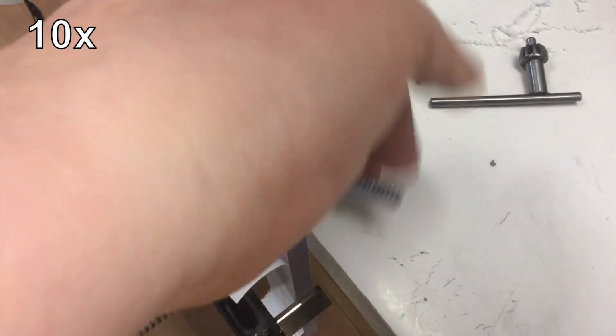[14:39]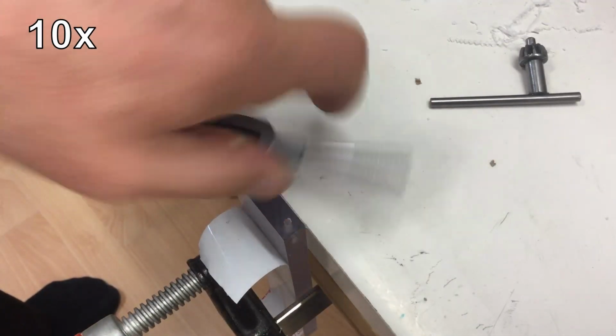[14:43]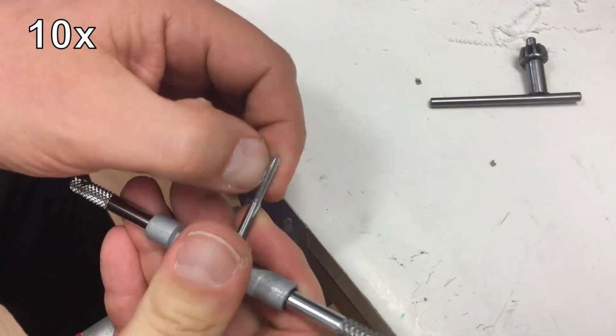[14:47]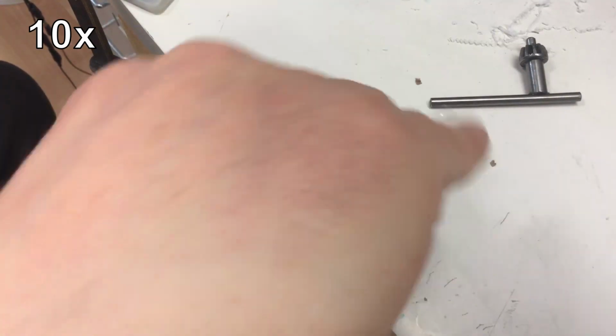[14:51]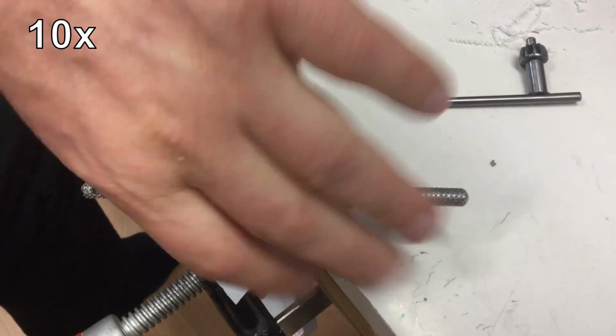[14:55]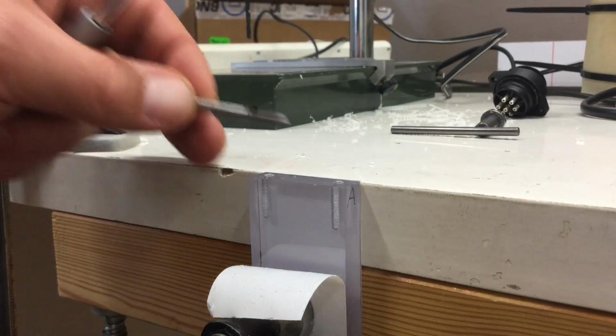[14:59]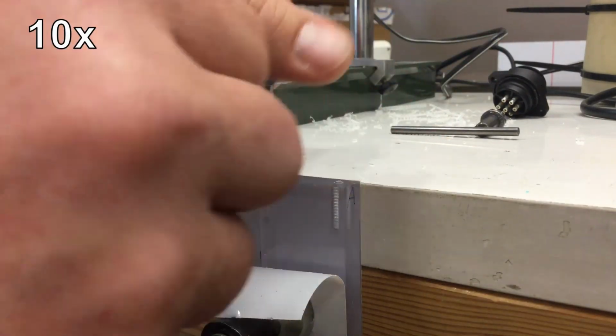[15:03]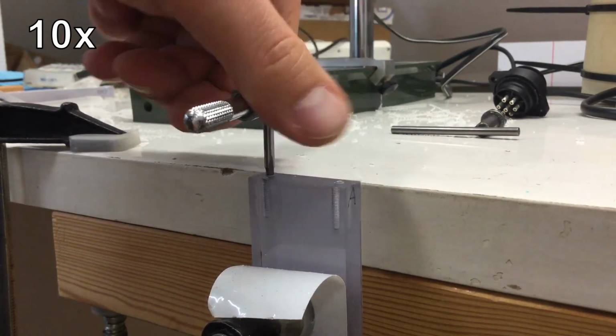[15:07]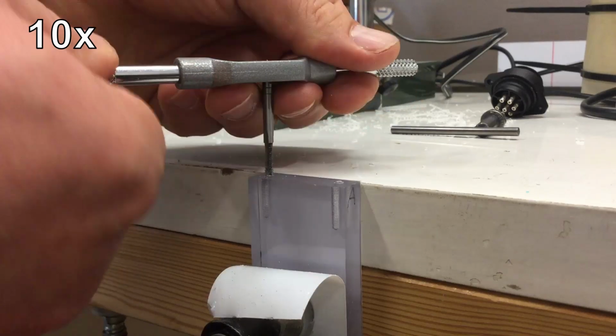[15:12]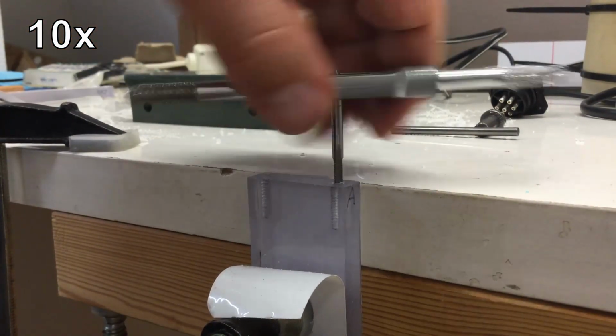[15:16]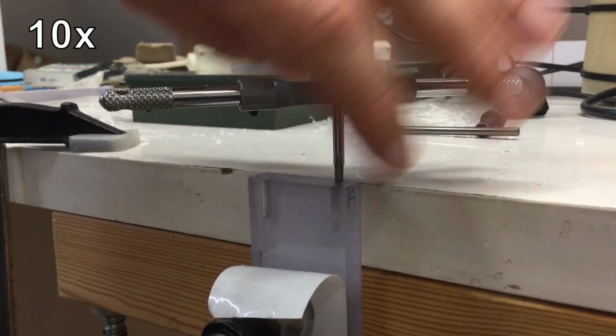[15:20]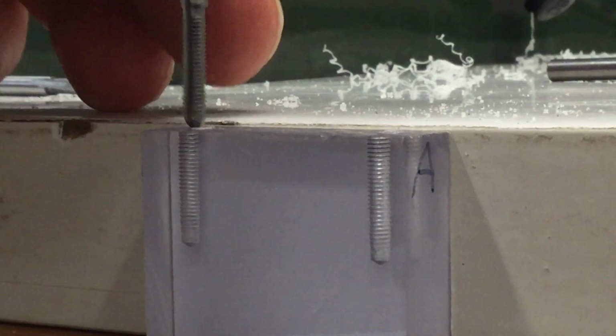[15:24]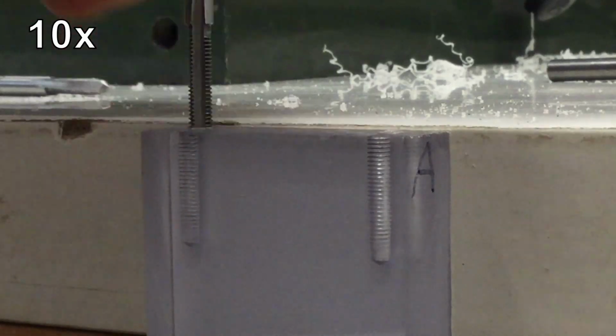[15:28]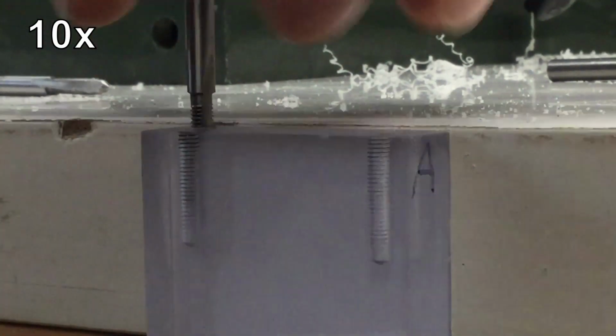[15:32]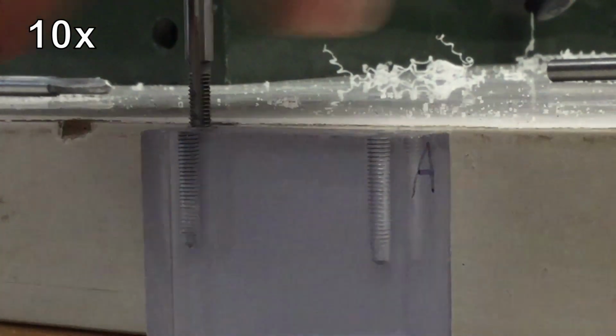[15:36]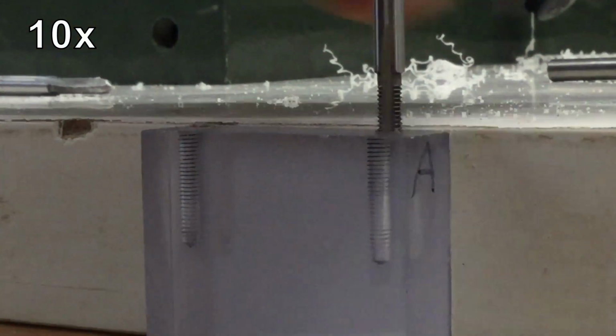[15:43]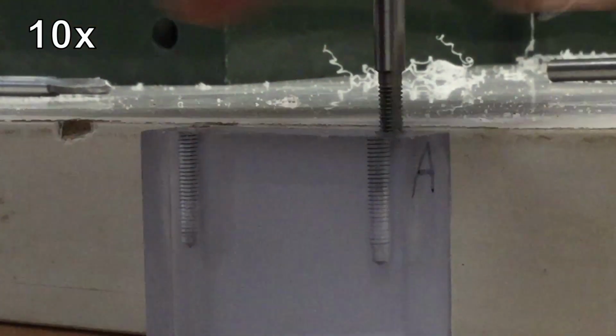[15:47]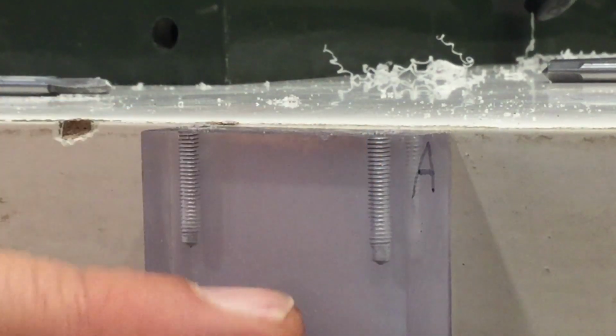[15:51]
Number 2. And the final. Ah, 6 more to go.
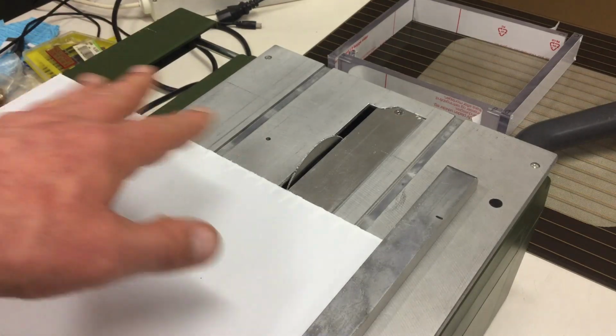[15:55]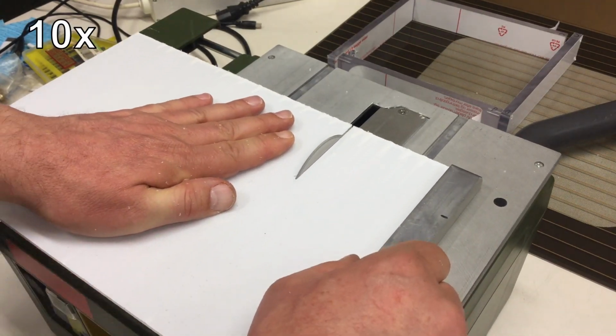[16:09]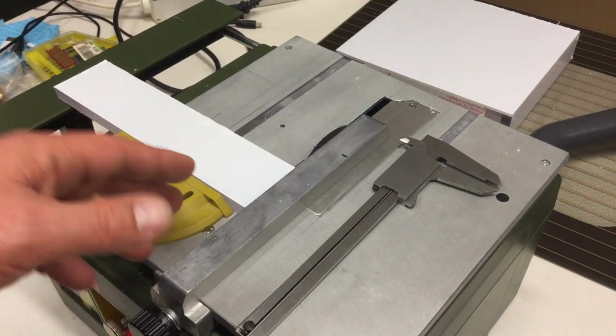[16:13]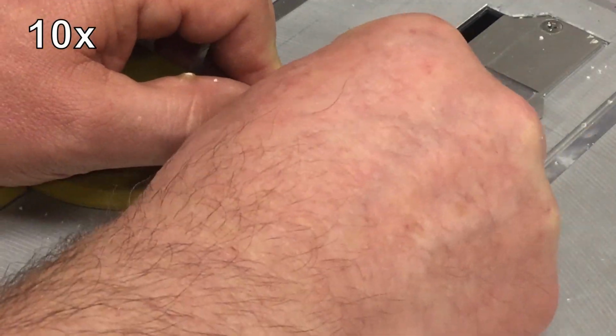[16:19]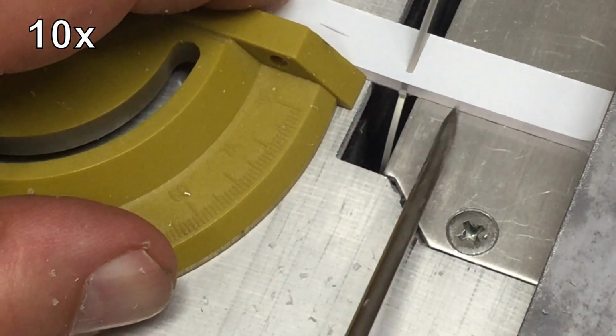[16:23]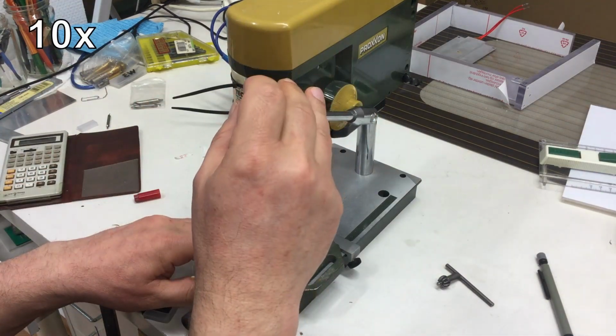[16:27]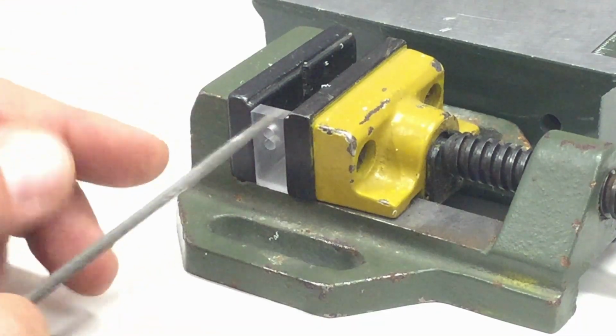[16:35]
While I wait for all the screws to arrive with the mail, yeah, Corona thingy and such, we can cut the bottom part of the case to size. And I need some other small parts for the innards of the case. Both have to be drilled, of course. This part here needs an elongated hole, so I drilled 2 holes, yeah, just 0.5 millimeter apart. Yeah, and now we file.
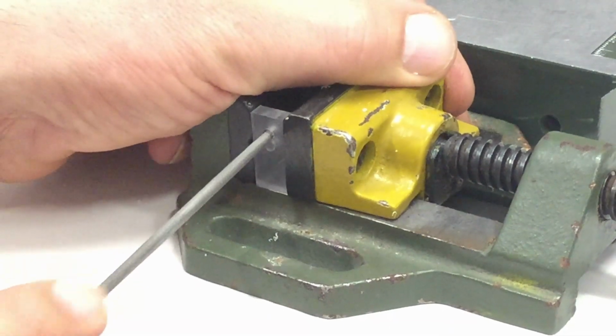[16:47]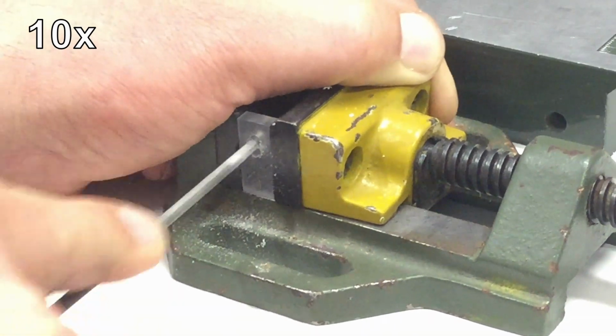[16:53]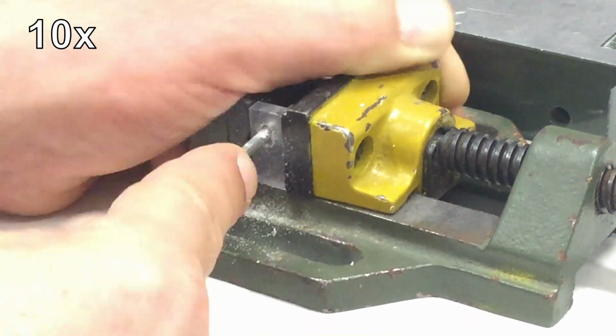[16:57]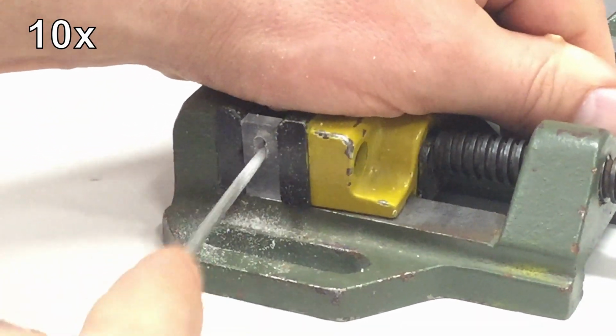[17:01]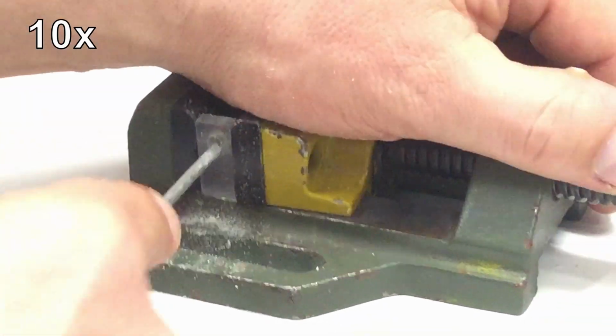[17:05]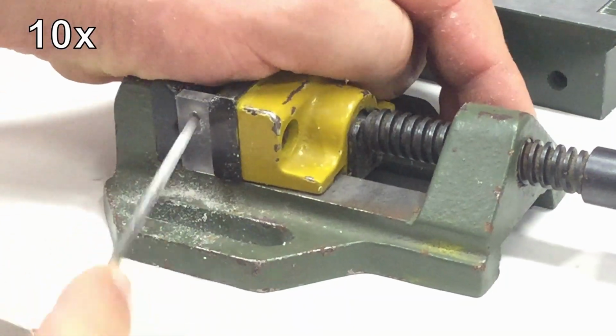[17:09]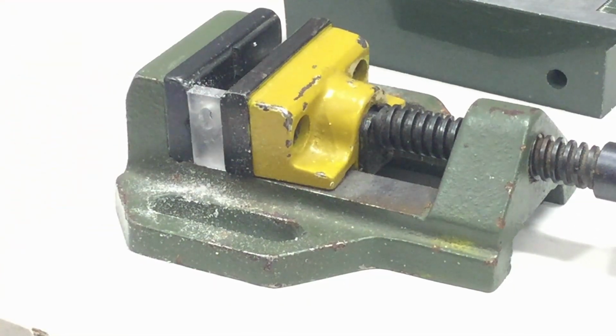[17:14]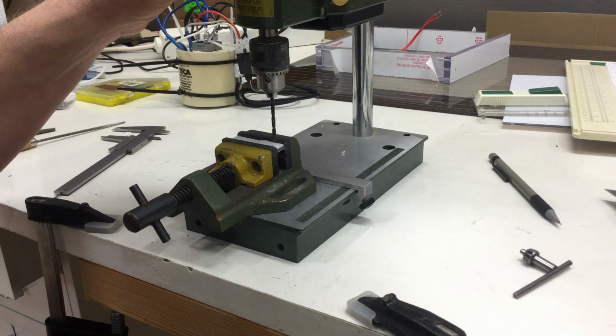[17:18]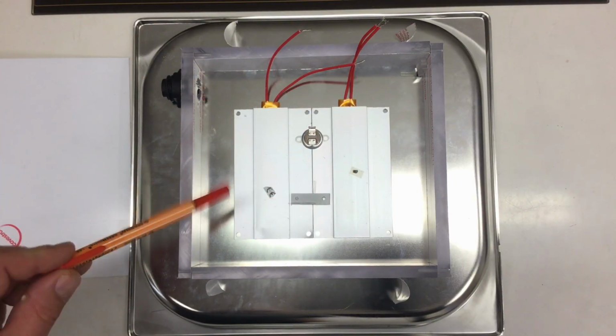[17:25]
Good enough. The last 2 holes for now. And that's how the parts are supposed to fit together.
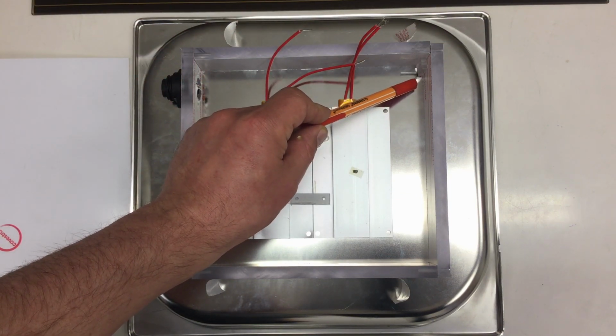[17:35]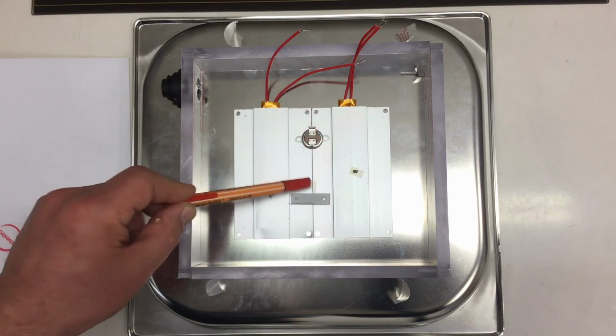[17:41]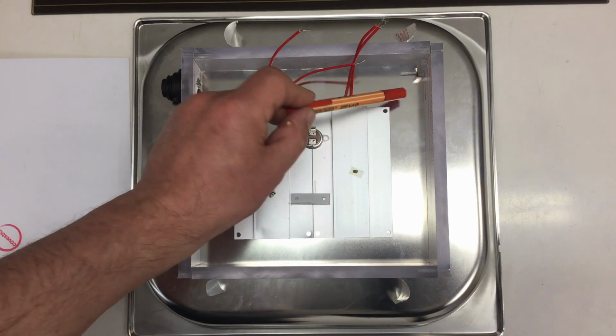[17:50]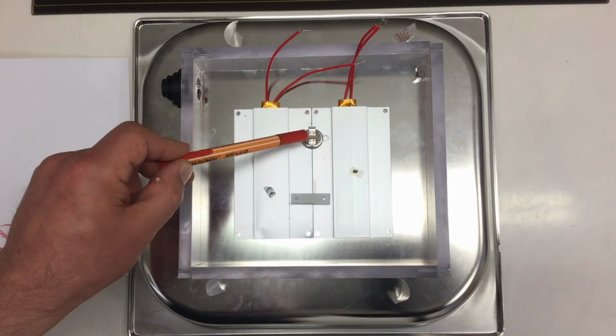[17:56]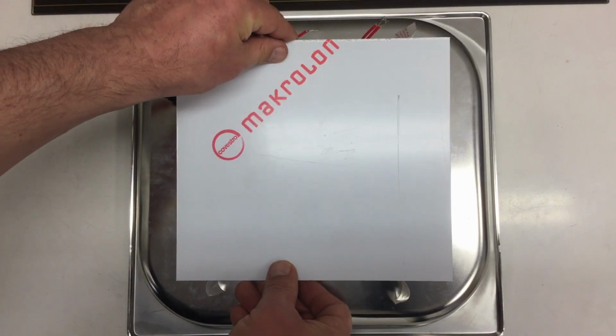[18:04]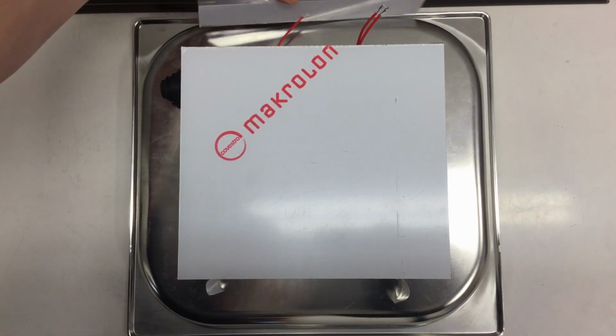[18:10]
Yeah, here my outer parts with the connector here in one corner, one DS18B20 temperature sensor held down by a little plastic part. Another 18B20 here, held down by a plastic part. Yeah, measuring the basin or bath temperature, measuring the heating element temperature, and for security reasons, a thermal cutout. And yeah, put a lid on it, which is actually not a lid, but yeah, the bottom.
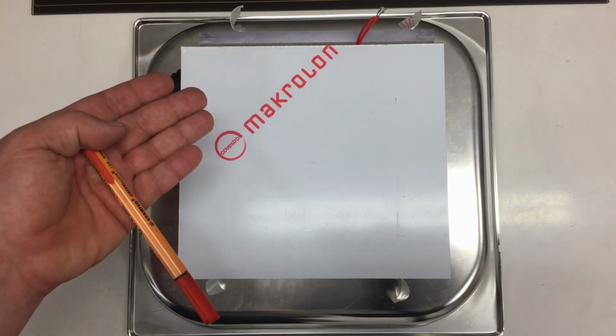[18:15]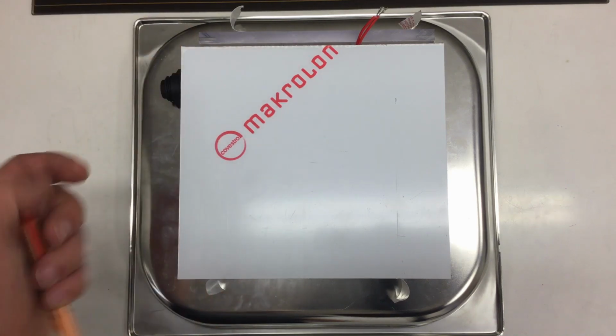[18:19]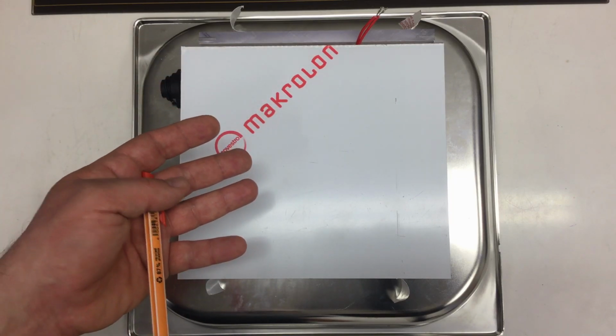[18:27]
Yeah, but anyway, without screws, I'm screwed. So I will stop for now and we will continue this at a later time when I have all the missing parts.
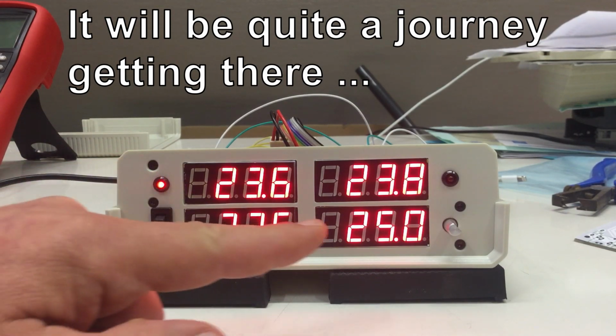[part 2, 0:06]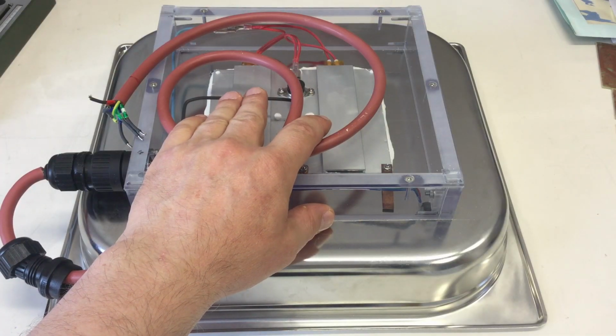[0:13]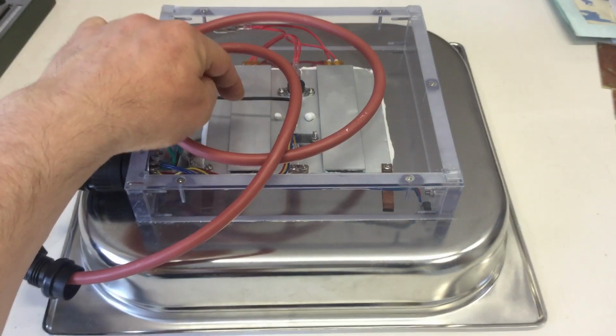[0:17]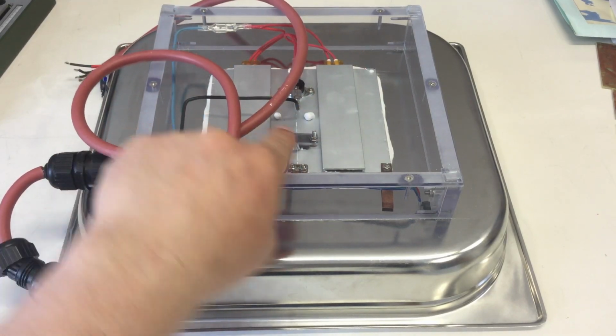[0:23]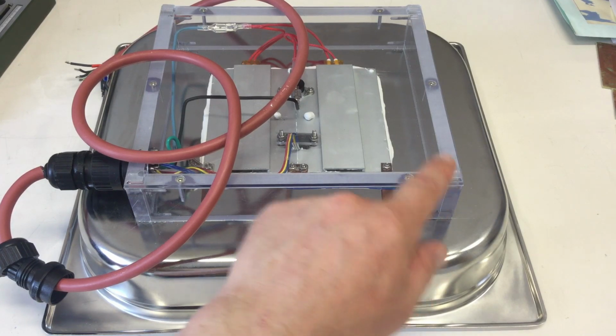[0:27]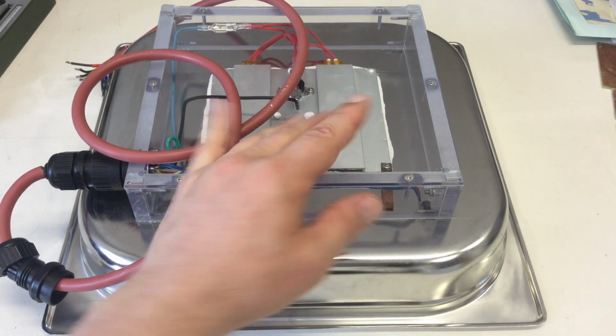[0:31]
And they lit up, and they do have a function actually. That's where we left off last time. Yeah, a laboratory water bath with a heating unit, including temperature cutout, and two sensors, one measuring the temperature of the water bath itself and the other the temperature of the heating unit.
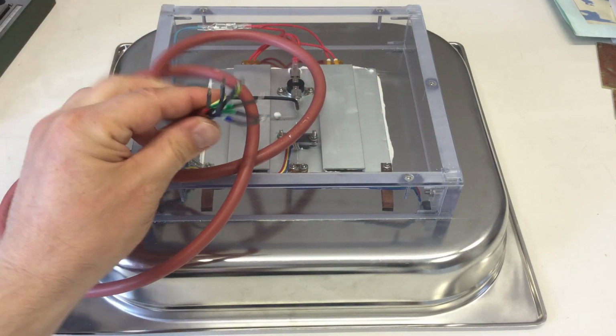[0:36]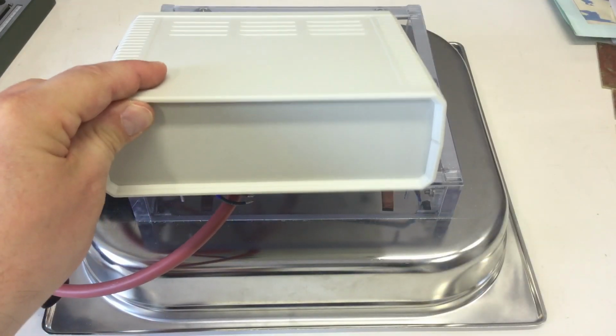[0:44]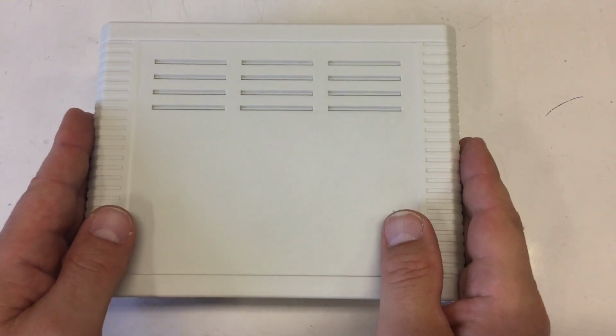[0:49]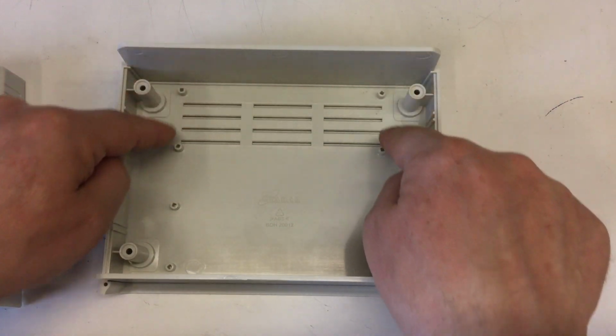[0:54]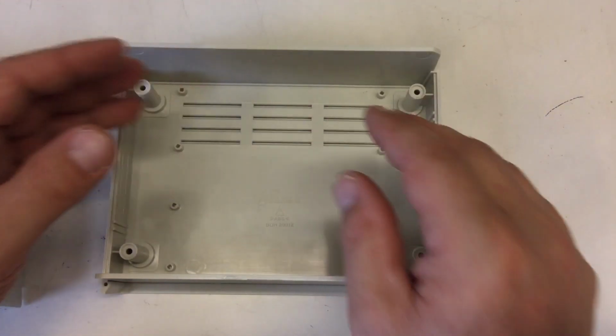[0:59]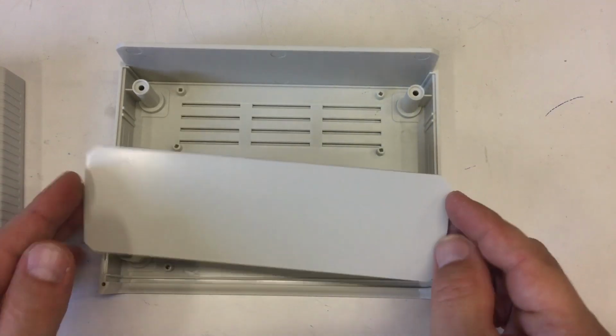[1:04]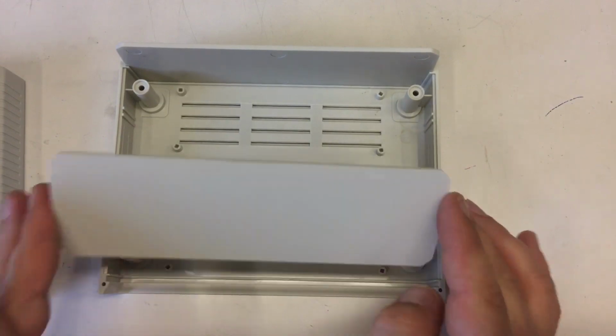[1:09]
Card link. And the question arose, what will go to the other end of the cable? And the answer is a temperature controller, of course. And inside the controller we find nothing yet. But there will be one board in the back with power electronics and all the intelligence. And there will be one board in the front for the front plate. And today I want to start with the front plate part.
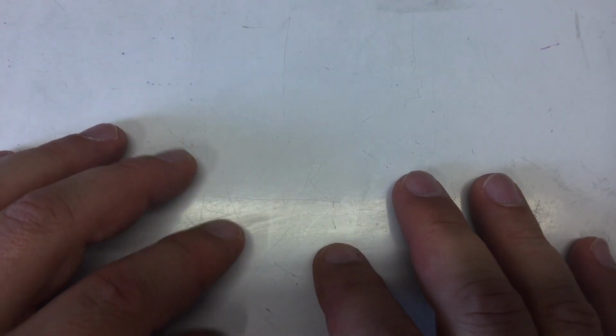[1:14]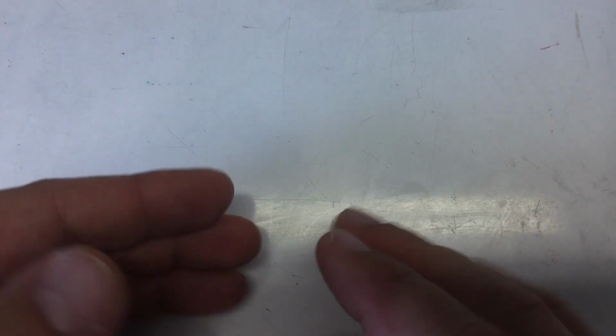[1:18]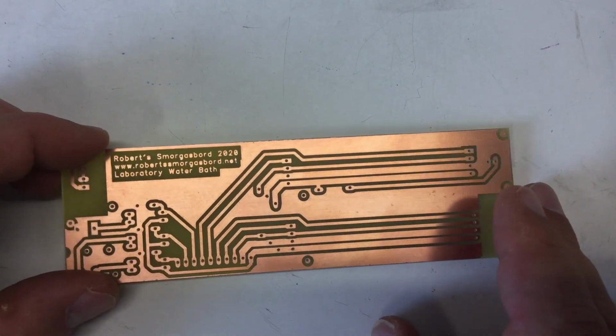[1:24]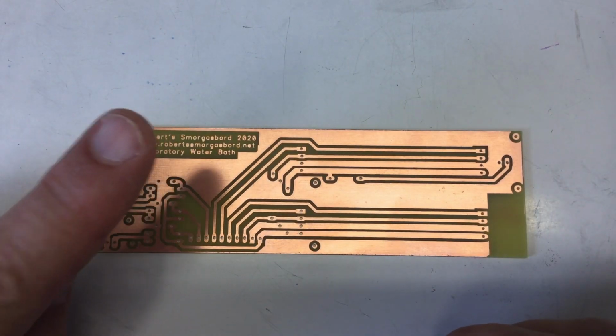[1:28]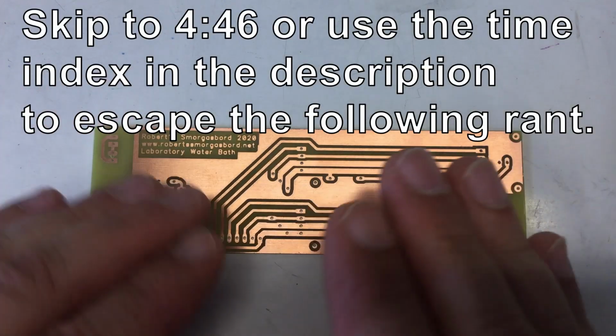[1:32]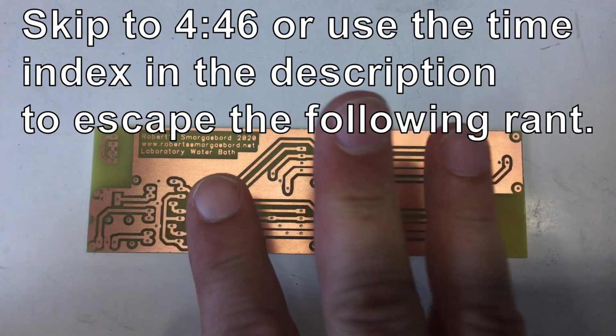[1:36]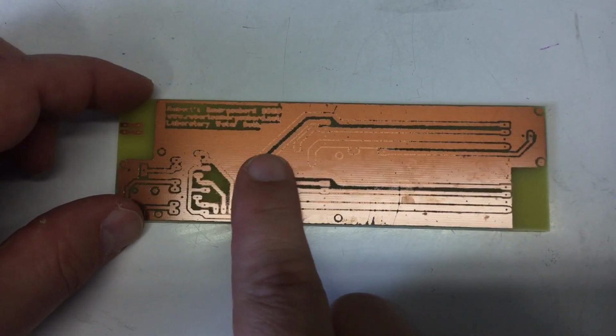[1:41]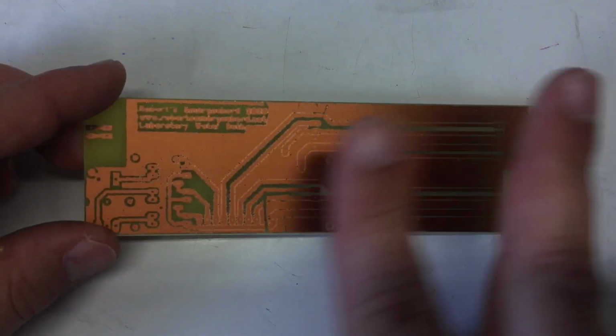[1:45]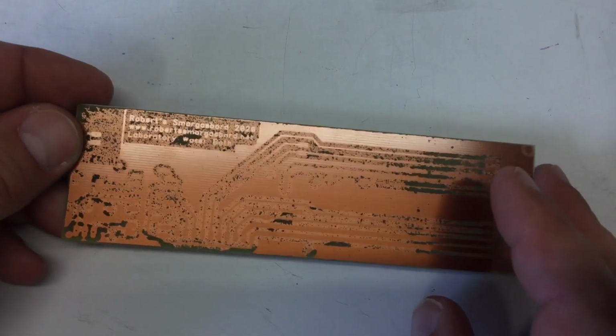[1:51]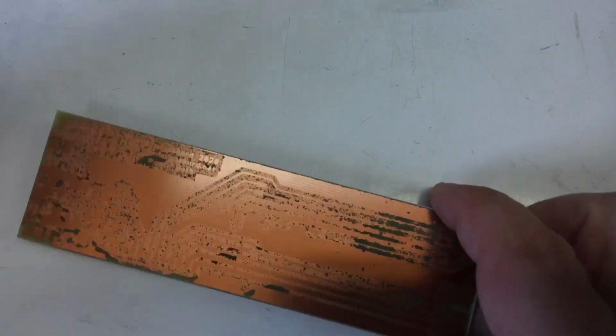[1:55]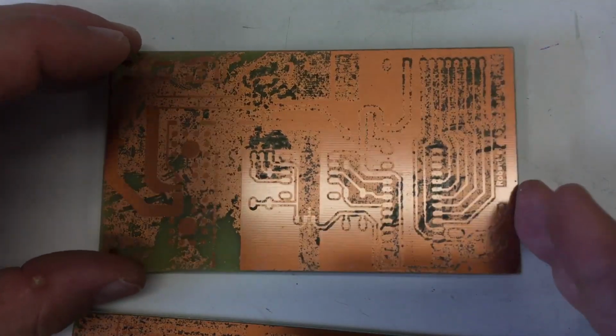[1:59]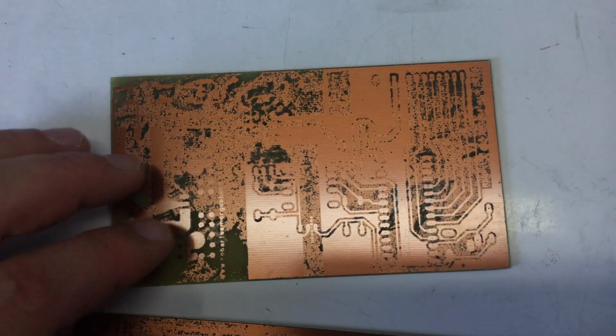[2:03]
I won't bore you this time with a cut together or time-lapse video segment about how I made the board for the front plate. I present to you the almost finished product, but not without interjecting a little rant about what I've gone through, because that here is a result of my third attempt. That here, this atrocity, was my second attempt, but it gets worse. That's my first attempt. And in that batch I tried at the same time to etch the controller board for the back, and yeah.
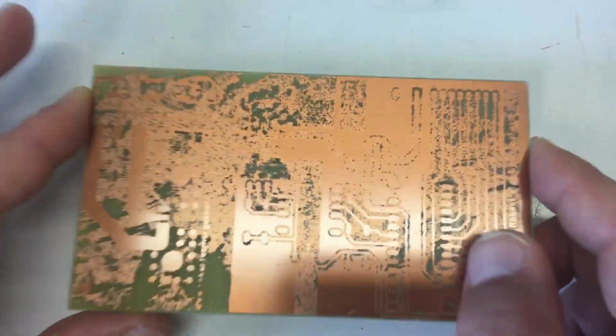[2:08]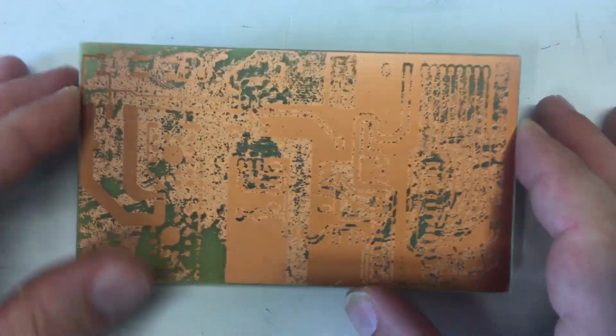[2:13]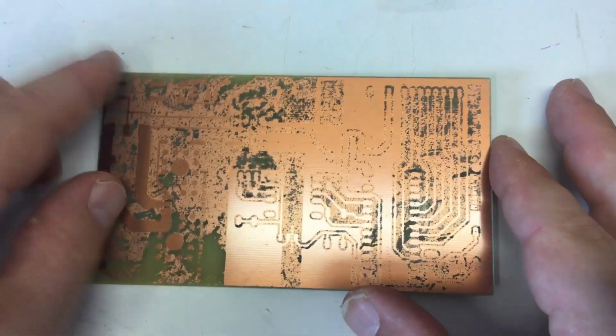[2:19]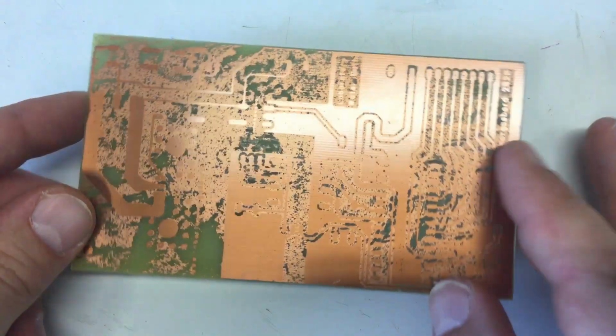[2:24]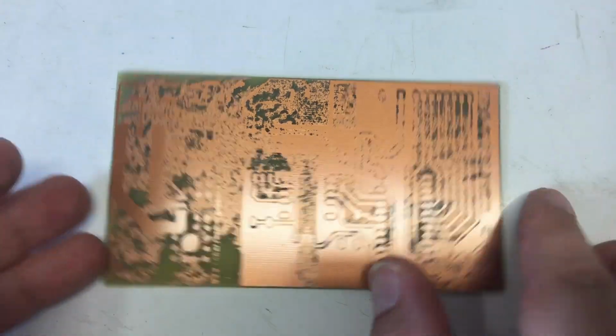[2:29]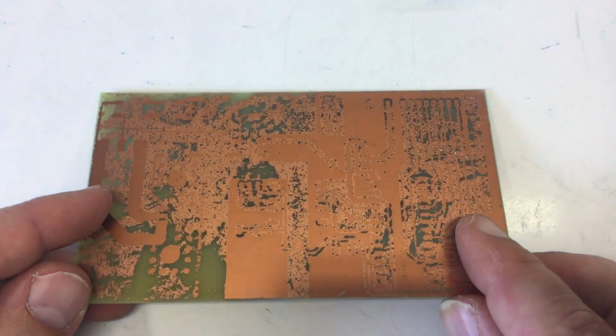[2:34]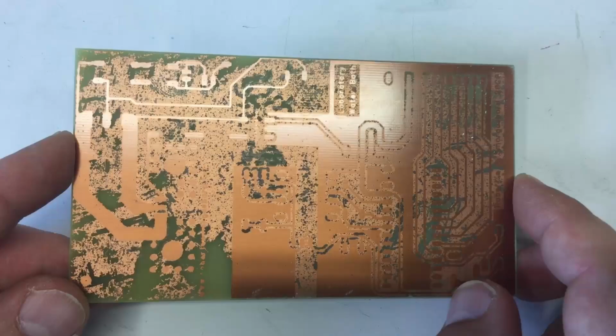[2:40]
So what happened was I changed my board material. Usually I buy Vanguard FR4 positive photoresist 1 ounce in Euro format, so 160 by 100 millimeter. But for these boards I bought some larger chunks, I think 150 by 300 millimeter, also Vanguard, also FR4, also 1 ounce, also positive photoresist. And I used exactly the same process, and that was the result.
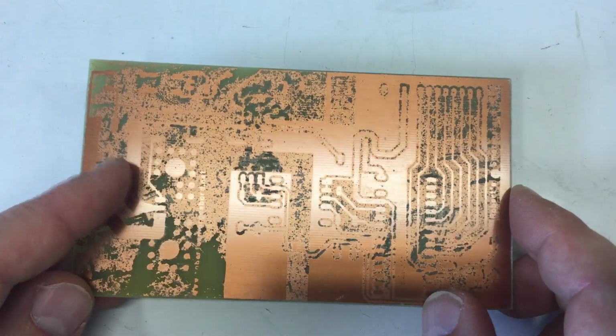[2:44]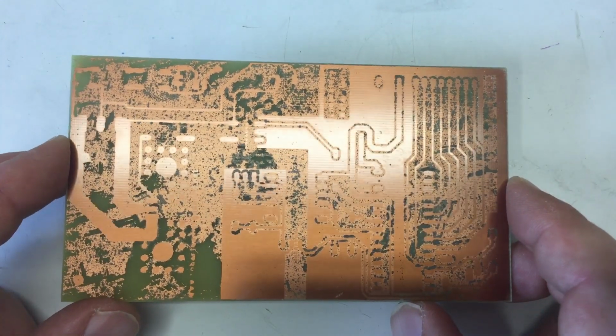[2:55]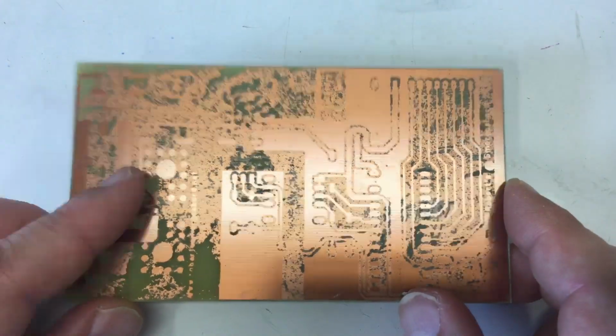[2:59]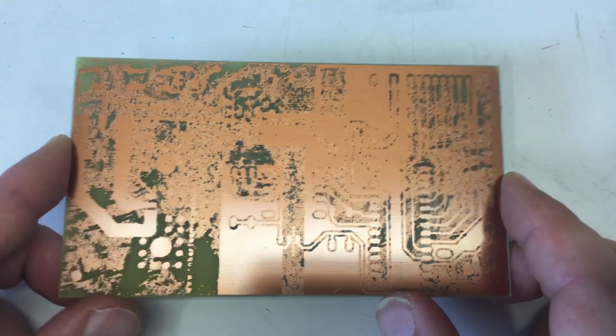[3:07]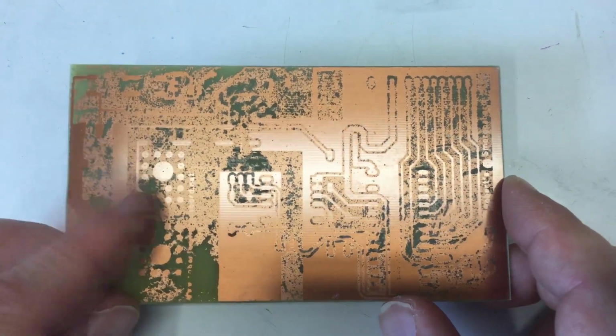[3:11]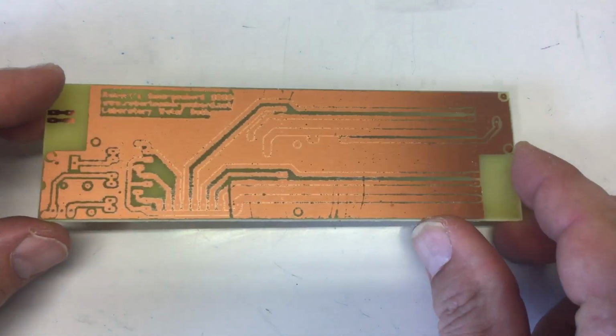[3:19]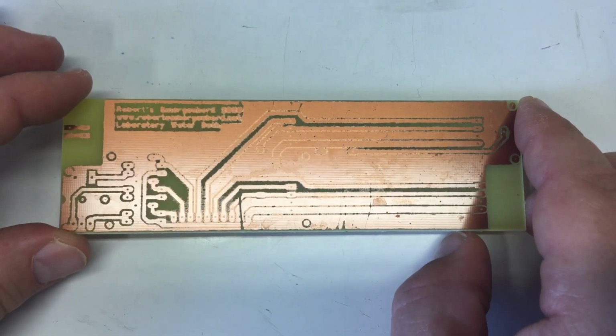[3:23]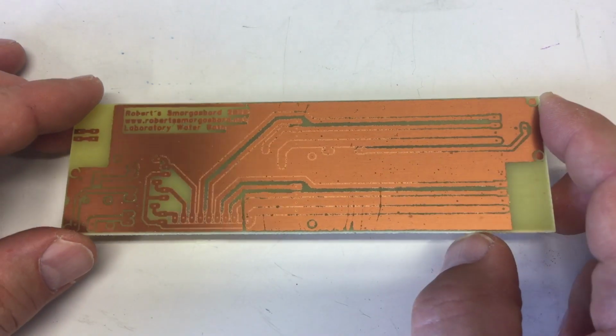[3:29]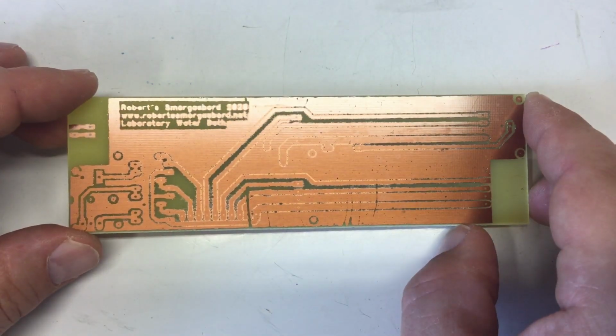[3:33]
And my first idea was, okay, maybe my etching solution is used up and I need to make some new one. So I did, and I etched that board first in the old etching solution for hours, and then in the new etching solution again for a few hours, and that's the result. So my idea was, okay, maybe I need to expose these boards a little bit longer. So I went up with exposure time from 3 minutes 15 to 4 minutes, and that was my second attempt. Also after etching in fresh etching solution 4 hours.
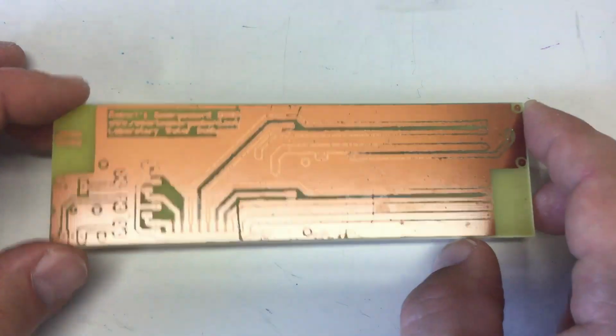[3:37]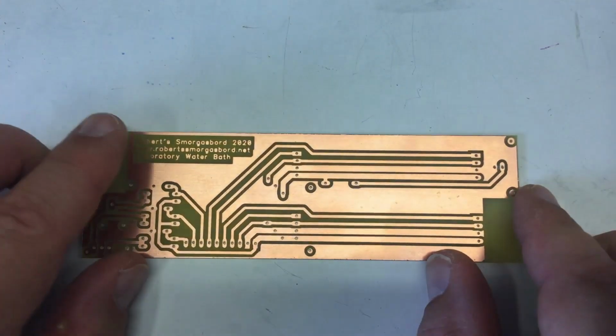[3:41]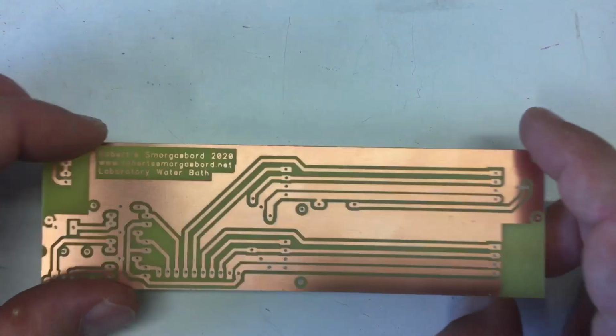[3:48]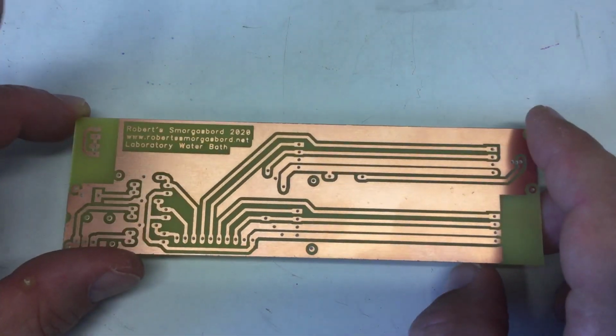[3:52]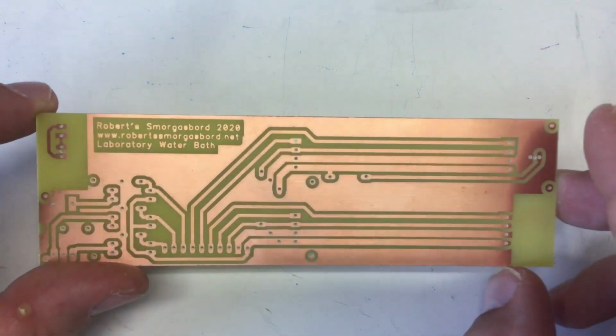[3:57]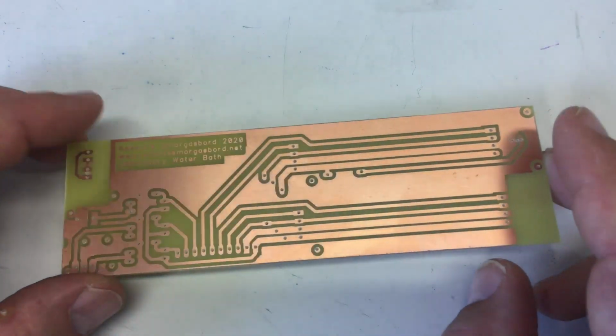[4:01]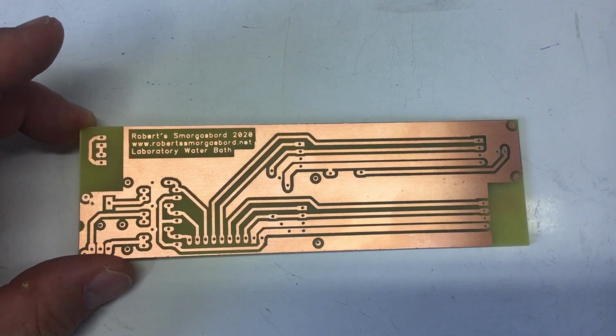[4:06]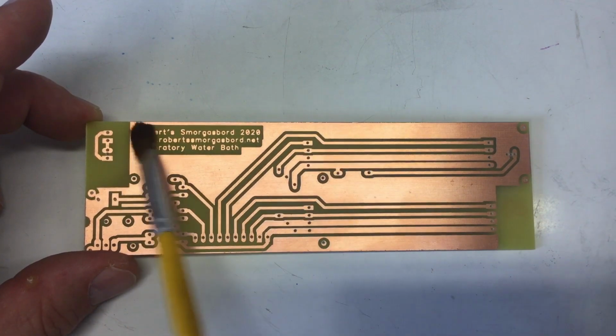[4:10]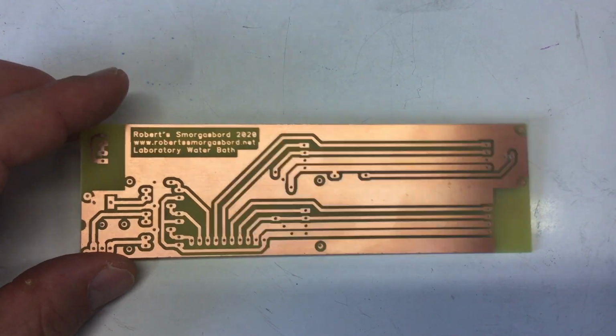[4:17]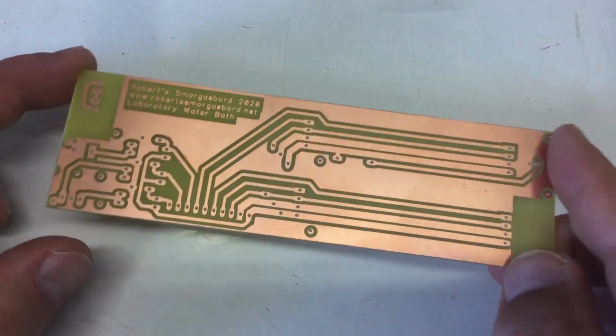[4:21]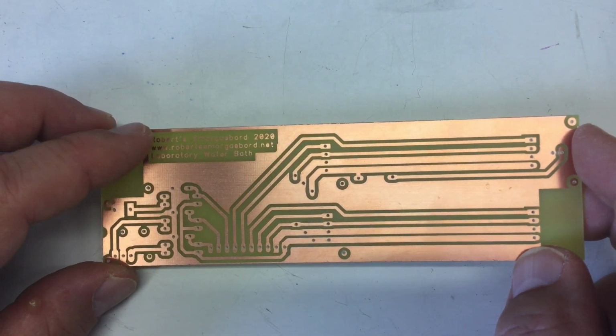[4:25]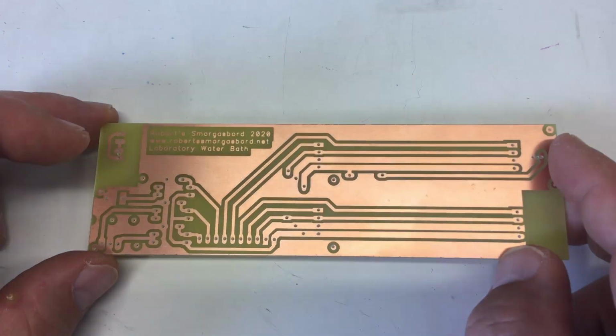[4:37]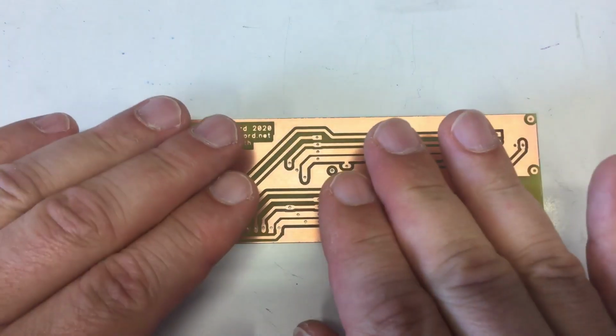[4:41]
But what I noticed in the previous 2 attempts was that I had some little flakes of photoresist in my etching solution. And I never ever had that before. So in the third attempt I went up to 4 minutes 45 exposure time. And when I developed that board, I used a little brush at the end to go over the whole board and brush off any loose photoresist. And you see the result. Obviously with that batch or these board formats, the photoresist leaves a little bit on the surface of the copper, even in the exposed areas. And that absolutely hampers the etching process. Okay, enough of that.
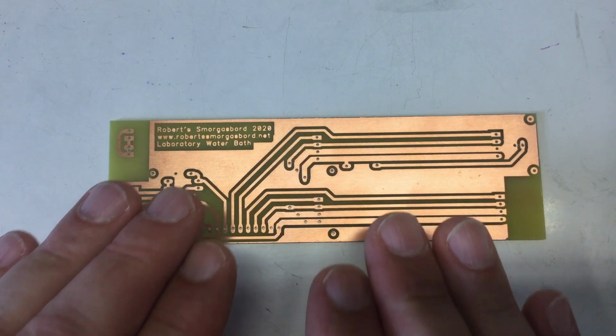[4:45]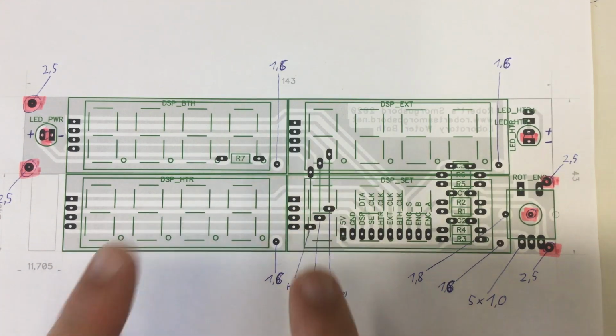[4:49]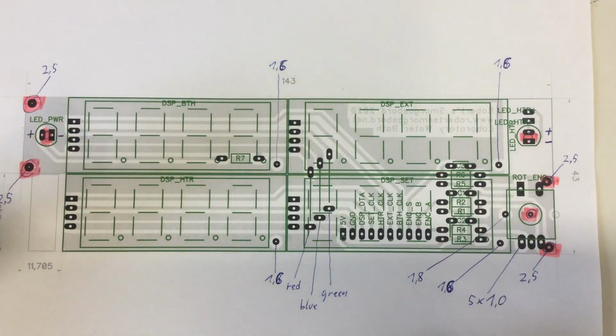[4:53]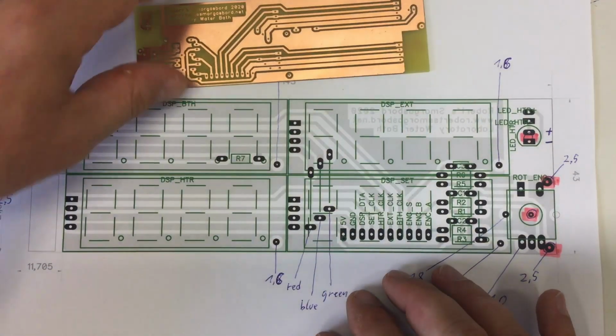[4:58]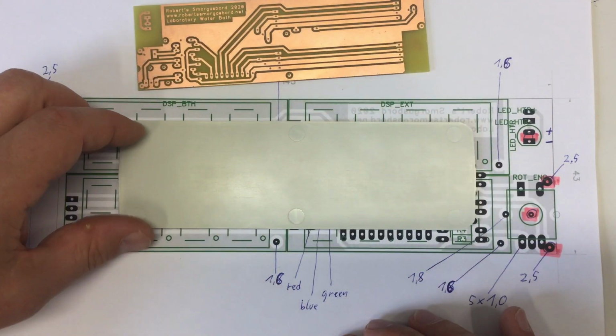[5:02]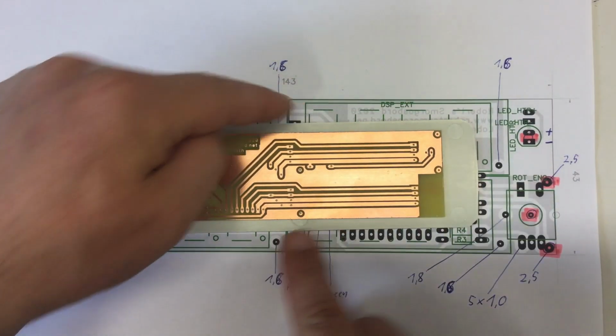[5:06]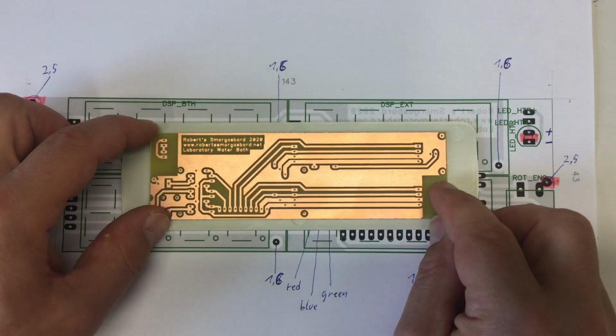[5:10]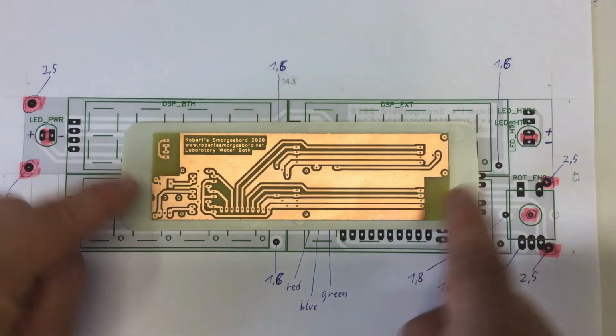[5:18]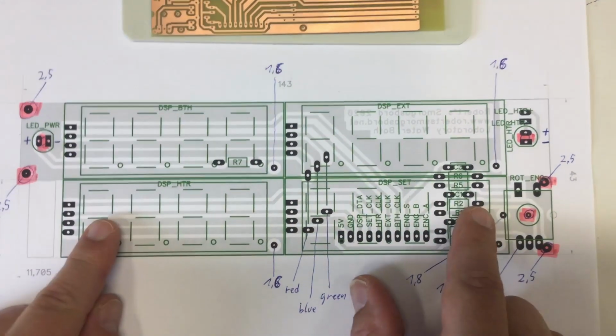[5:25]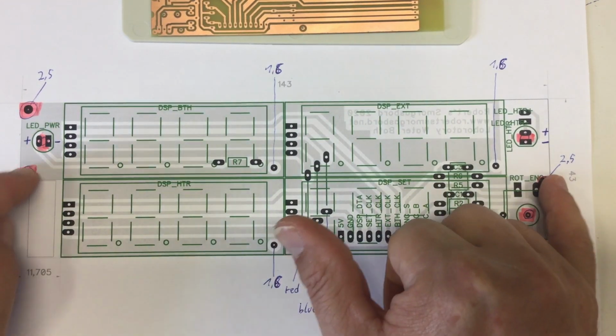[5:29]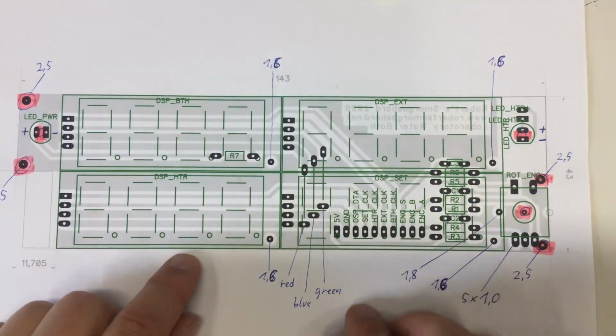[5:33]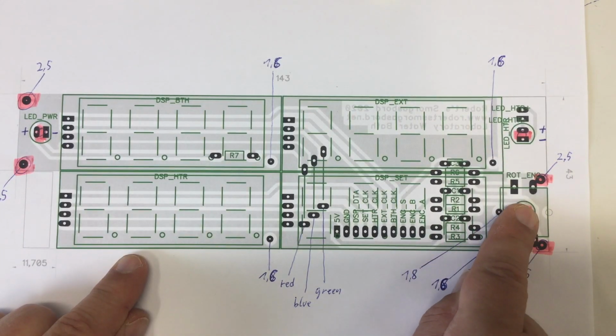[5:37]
Let's go to the front plate. So that's the board that will go behind the front plate and will contain all user interface elements, but for the mains power switch. And we already saw the board and the front plate, and the idea is that the board is in both axes completely centered on the front plate. And the reason I haven't finished that board is that I will use the holes in the board, or some of the holes, to locate the holes I need in the front plate. And that would be 4 screws at the edges, holding the board to the front plate. 2 holes for LEDs and 1 hole for the rotary encoder.
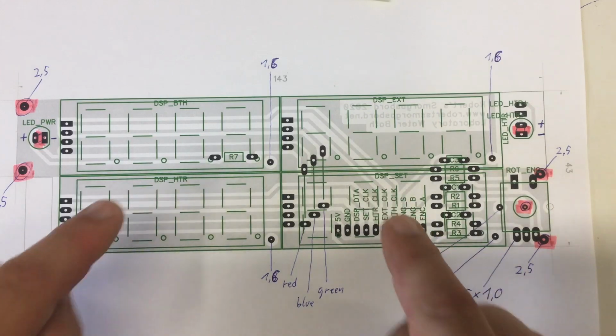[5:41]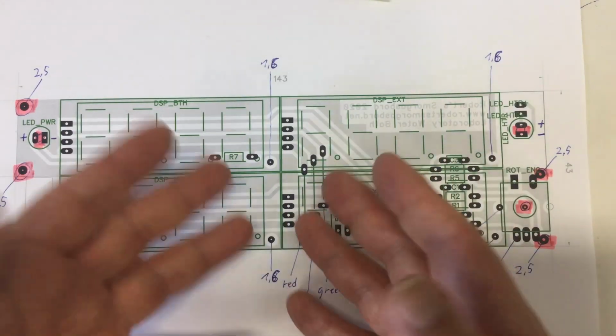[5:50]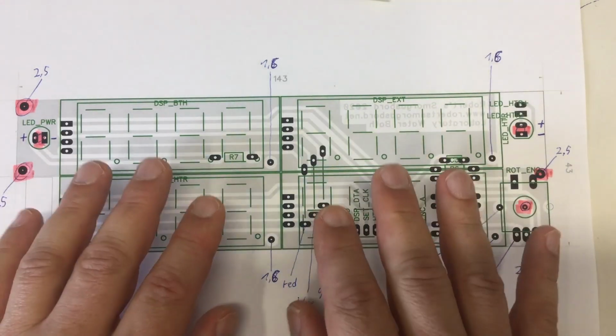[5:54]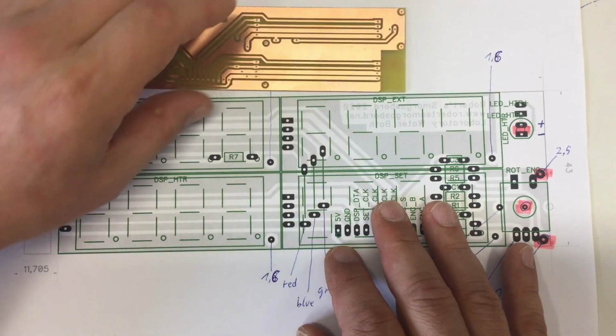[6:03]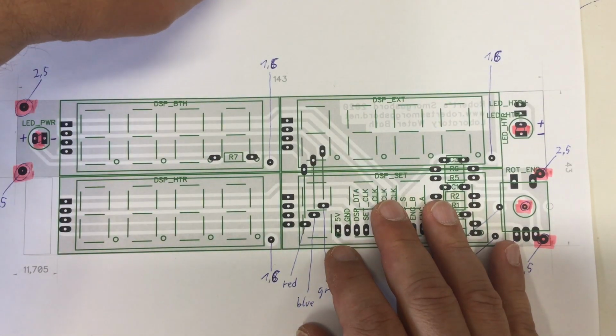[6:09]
And I will show you the circuit and maybe talk a little bit about the layout of the board. But if you're really hardcore, I made 2 atrocious videos about how I created the schematics and the layout in DipTrace for that board. And don't watch it, but anyway, card link. So now let's
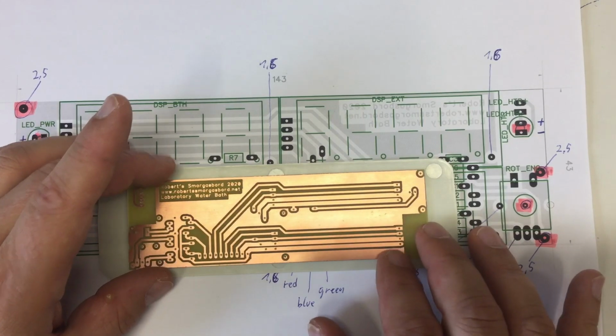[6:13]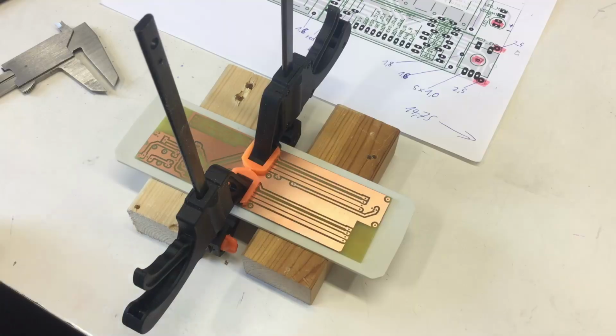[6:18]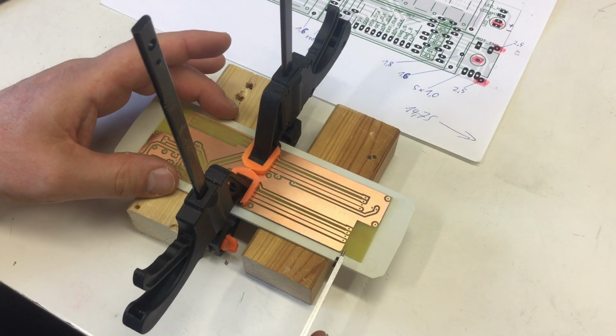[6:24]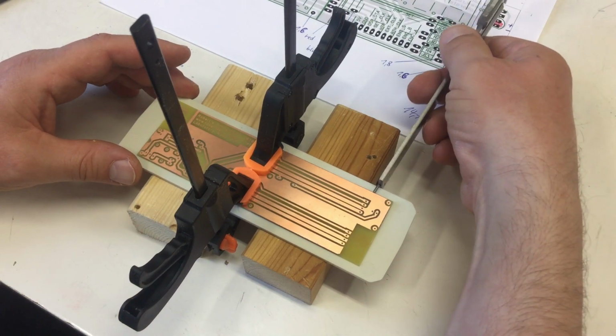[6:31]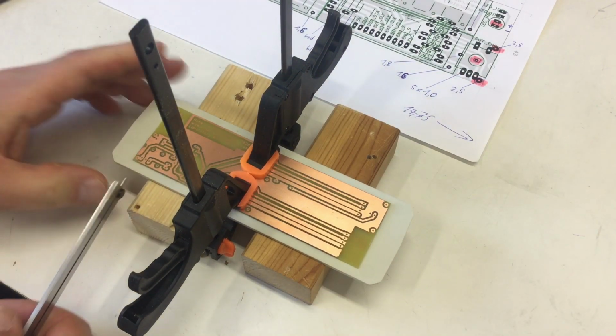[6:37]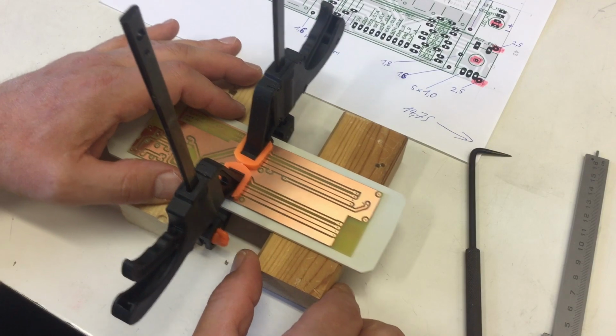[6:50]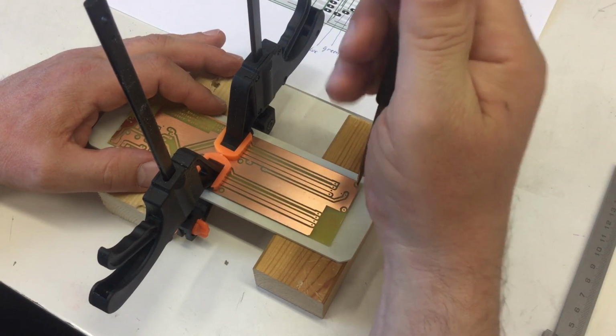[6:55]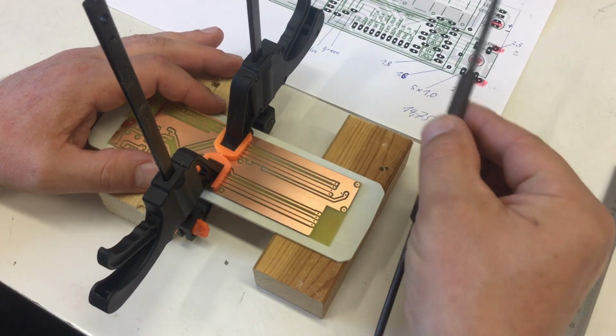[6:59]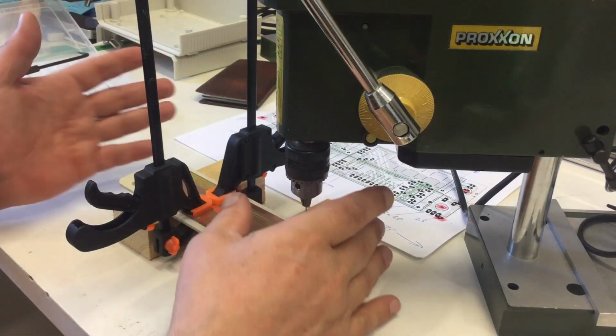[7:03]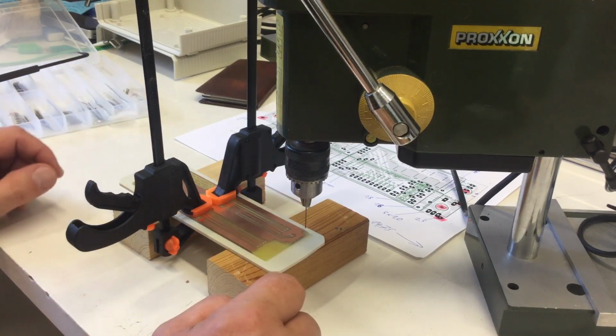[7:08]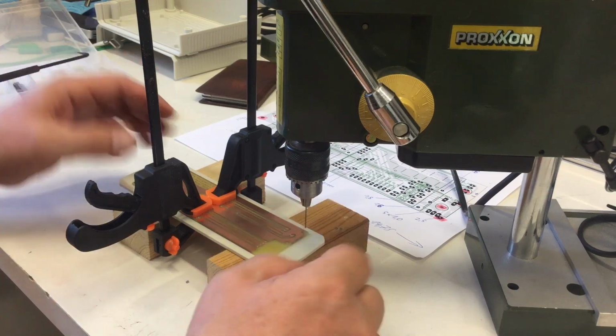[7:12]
center that thing here somehow and transfer some marks for the holes I need. I centered the board on the front plate to the best of my abilities using a caliper. This is just touching here, and that's 5.6 millimeters. And I did that on all 4 corners, and in the other dimension it's 14.75, and I won't adjust the caliper again for that. Anyway, I can now transfer the holes I need to my front plate. Hopefully. No, that's not working. I need a drill. And if I have to use an 0.8 millimeter drill to mark the holes, I can drill them right away with 0.8 millimeter. They are little pilot holes.
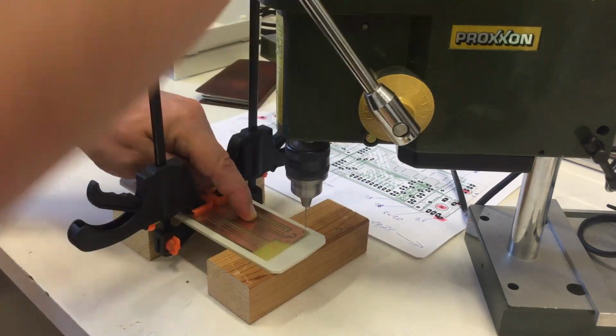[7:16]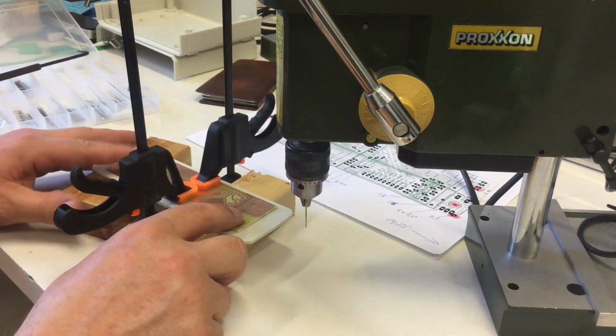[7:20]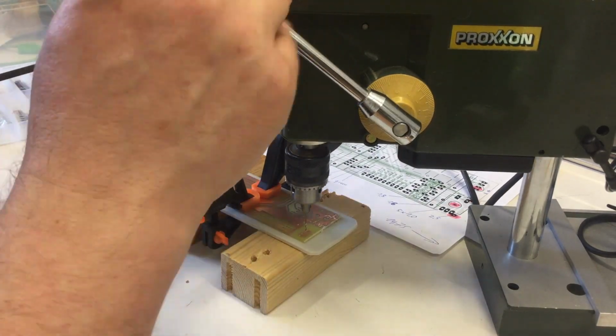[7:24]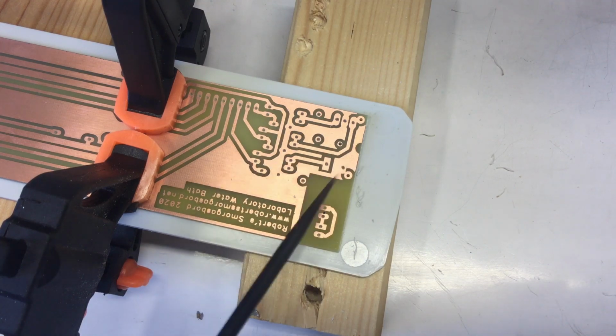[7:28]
Please note, the sole purpose of a few holes here on the PCB is to make markings on the front plate. For example, I have a little hole here between 2 pins of an LED, so that should be the center of the LED. And I have a little hole here, that's the center of a rotary encoder, where the 6 millimeter shaft should stick out through the front plate.
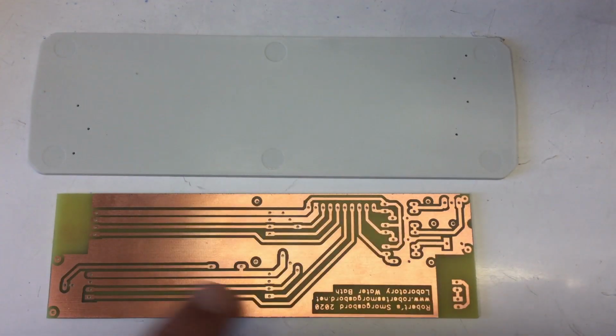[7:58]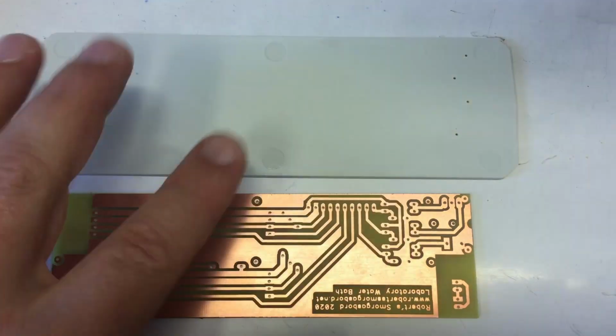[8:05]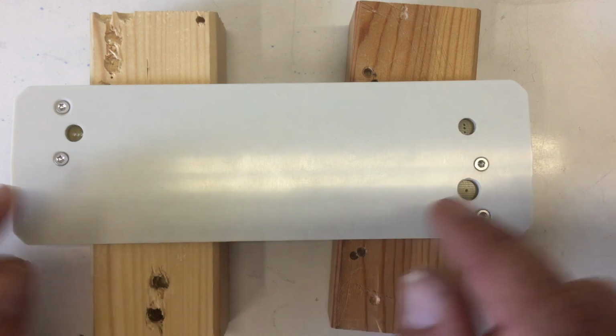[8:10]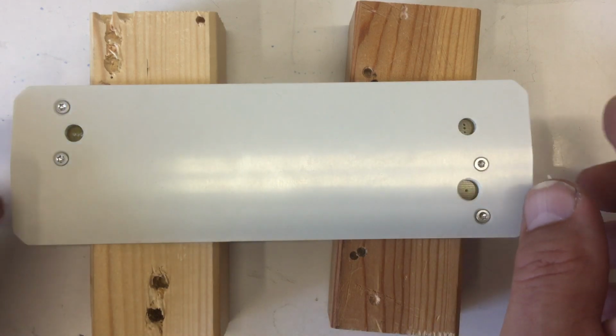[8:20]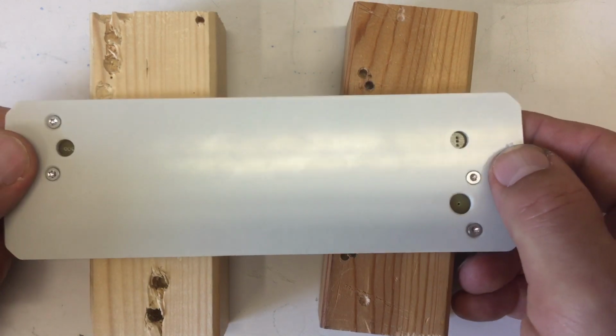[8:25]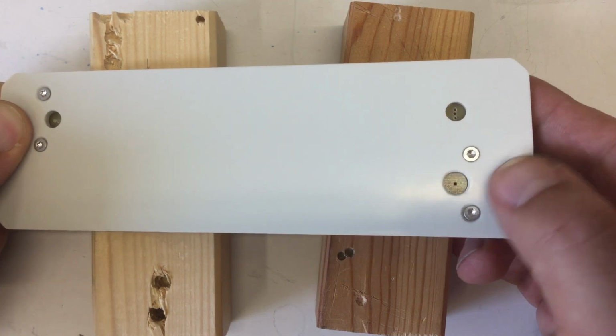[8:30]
Anyway, I can finish drilling now all the holes on my PCB to size, and I can make the first 7 holes on my front plate. And I've just done that. So the 7 holes, 4 for the screws, nicely countersunk, 2 for the LEDs, and 1 for the rotary encoder. And you see the holes in the PCB line nicely up with the holes in the front, and also the center hole here from the rotary encoder.
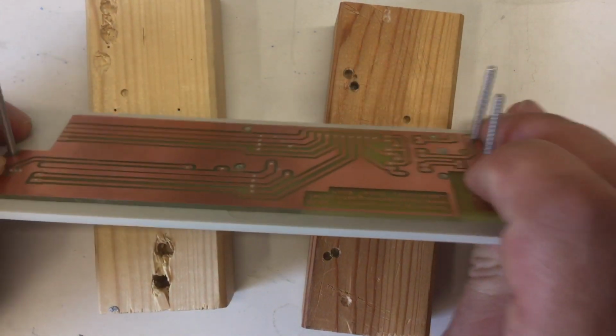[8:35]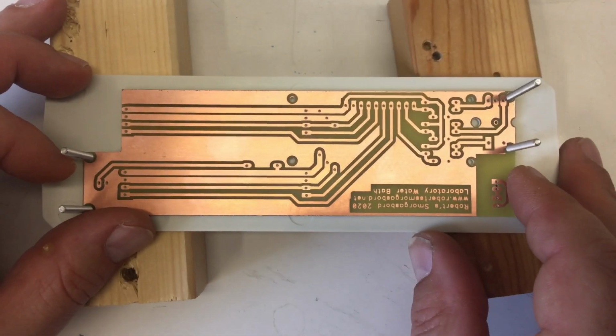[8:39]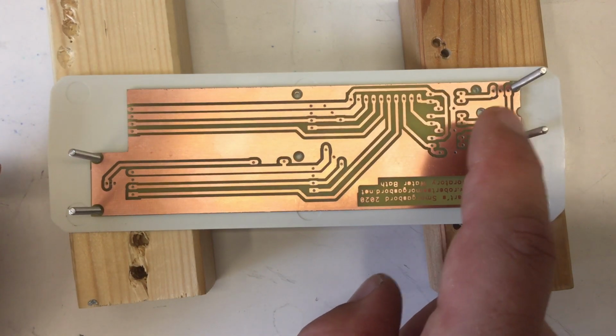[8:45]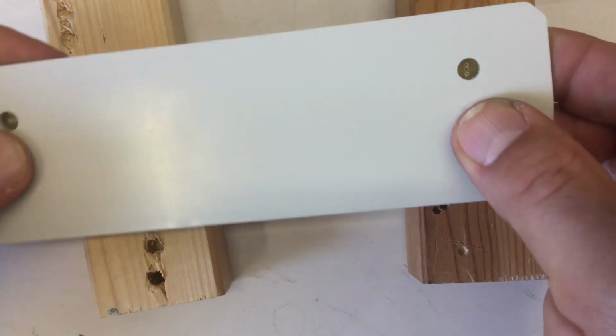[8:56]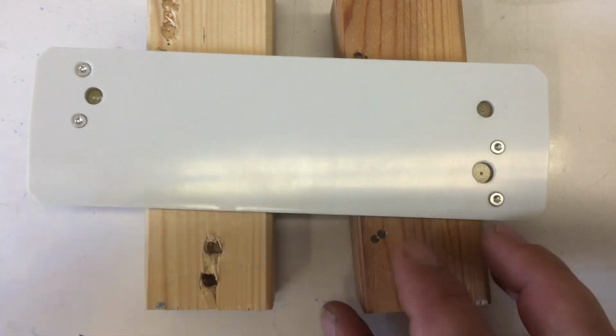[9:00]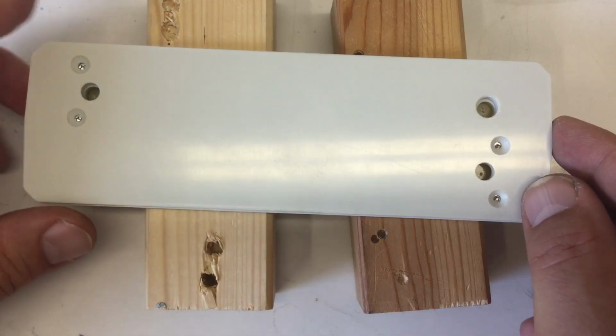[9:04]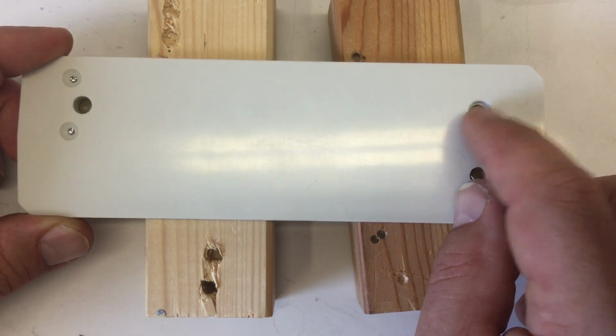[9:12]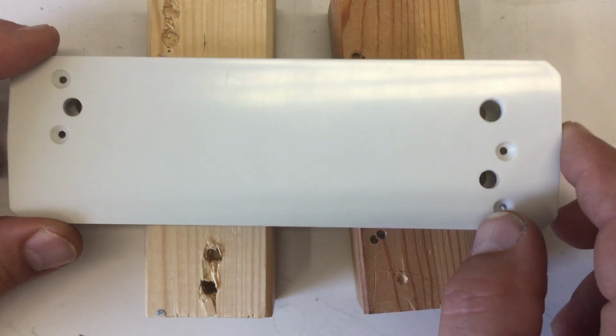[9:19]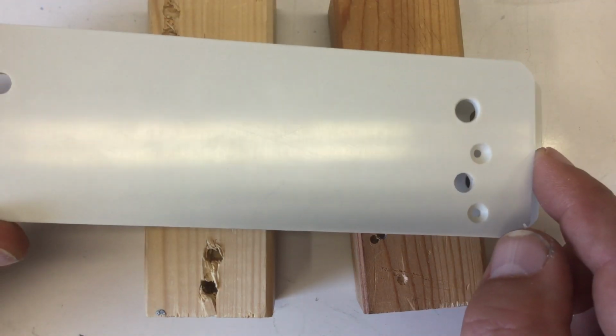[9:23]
And I also finished, don't lose the screws, drilling the PCB, and I also made a cutout here and filed a little bit off for a large holding tab from the rotary encoder. And I have to admit that I messed up at one point. That's the second try. That was my first try, and you probably see it, but the holes for the LEDs are 6 millimeters. And the hole for the rotary encoder is 7 millimeters, and I did the 7 millimeter hole by hand, and I got the wrong hole.
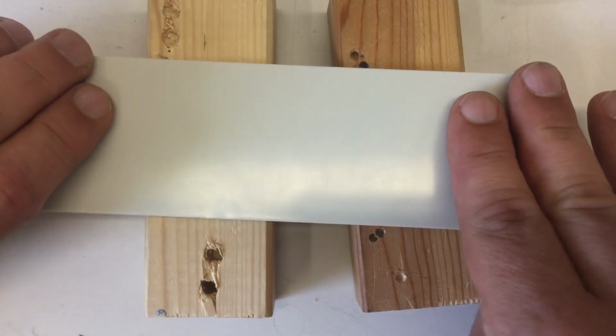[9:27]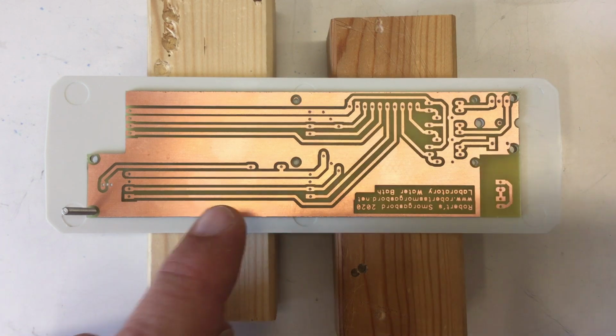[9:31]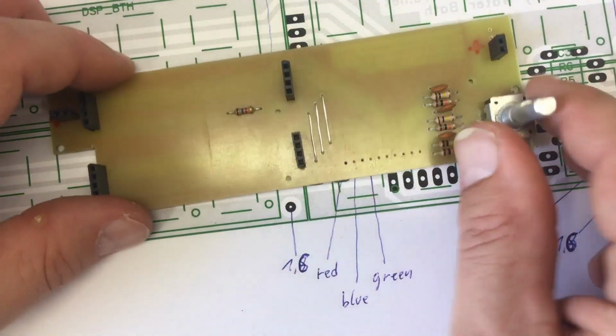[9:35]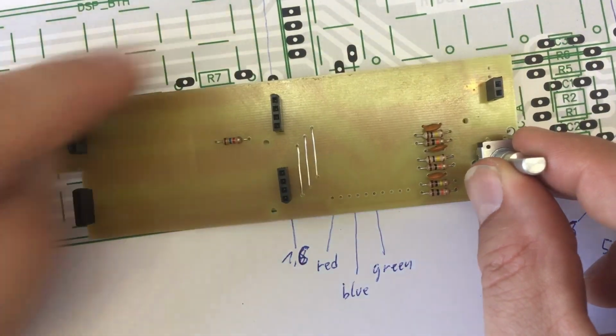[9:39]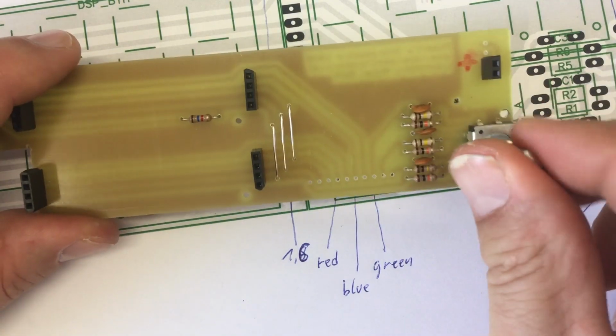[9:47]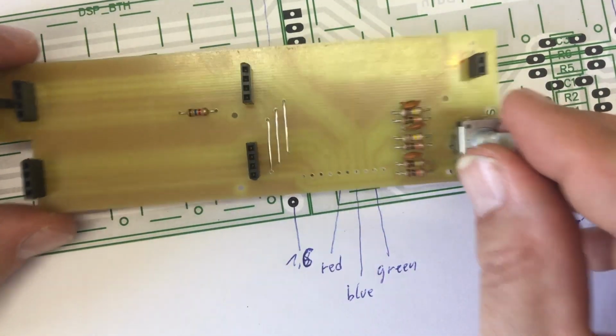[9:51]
Shit happens. Anyway, time to solder, and now I'm losing the screws, the PCB, and then I come back to you. I finished soldering the board, and there was not really much to it. Most of the components here are these headers where some stuff will go in, and of course a rotary encoder. But I want to point out a few details of the layout.
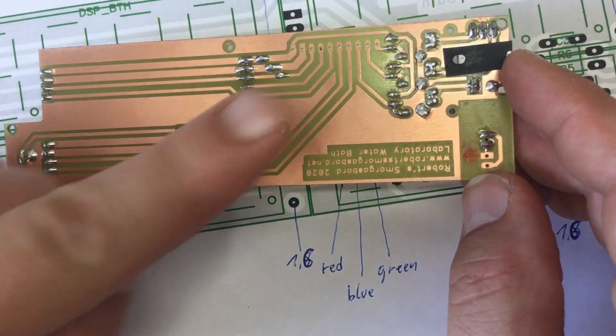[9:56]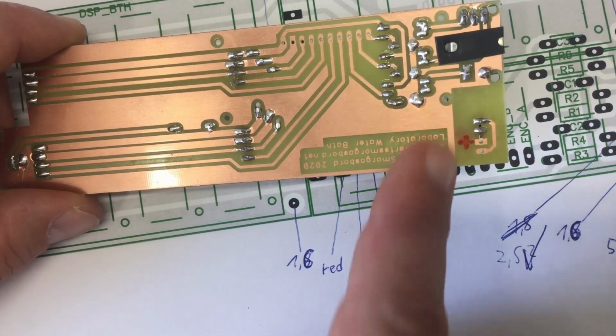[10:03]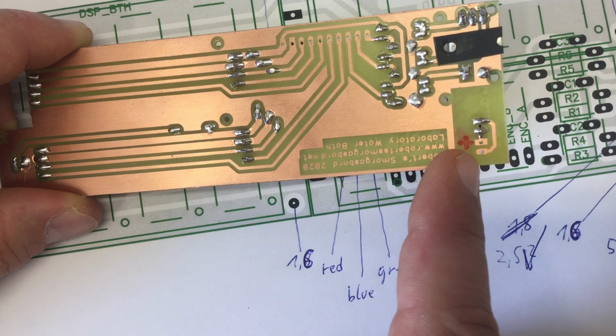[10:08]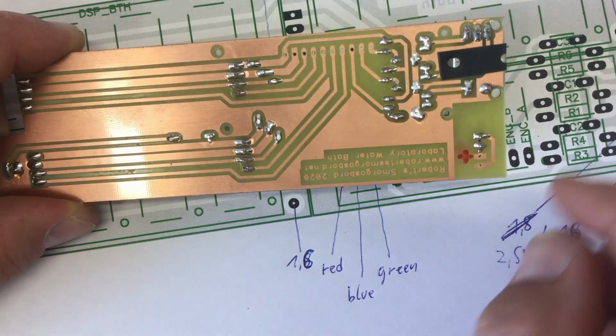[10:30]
Yeah, I already put a card in the link here where I made the schematics and the layout of the board. So there are some changes. For example, here, this area where you have rather large creeping distances, at least 6 millimeter, but I guess it's a little bit more to the rest of the board. This will be connected to AC mains, not directly, but it will have a connection to AC mains. So this is an isolated area here.
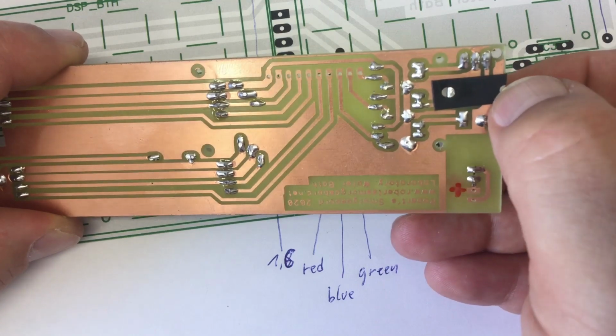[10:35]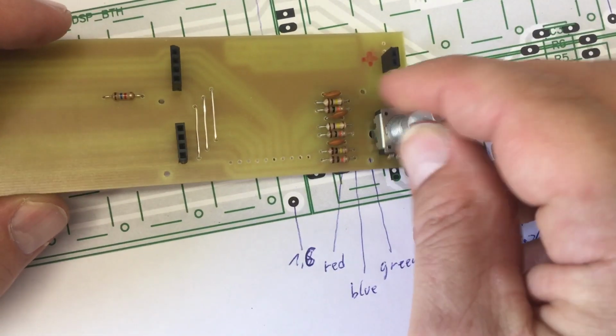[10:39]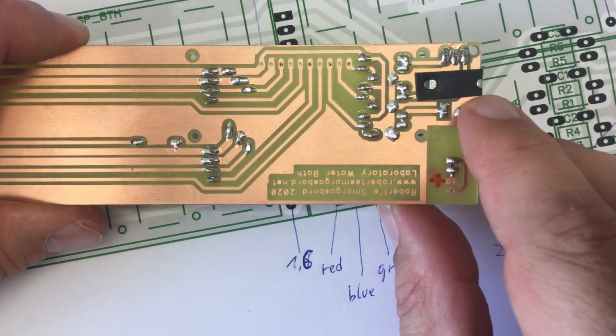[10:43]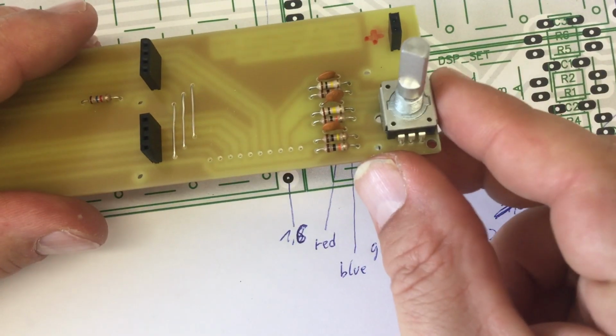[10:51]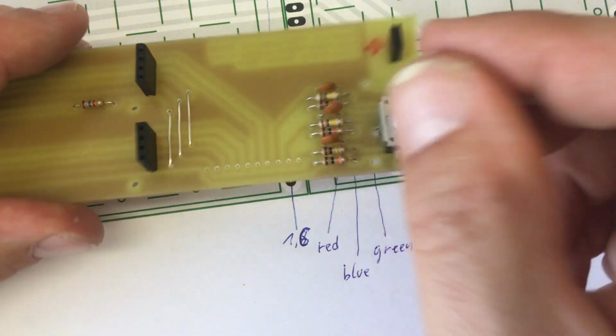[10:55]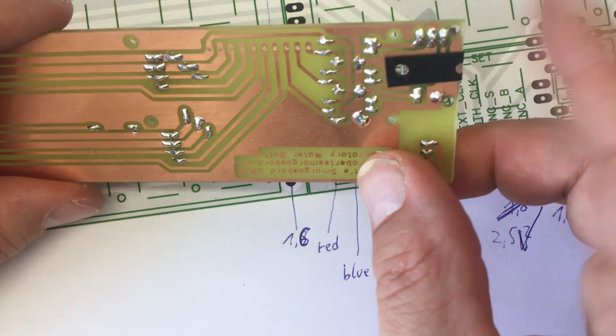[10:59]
Also, these clamps which you bent over to hold the rotary encoder in place. There's a little bit of isolation material here so that the clamps don't contact the copper of the board, so that the body here and probably the rotation axis and maybe a knob here stay isolated from whatever is going on the board.
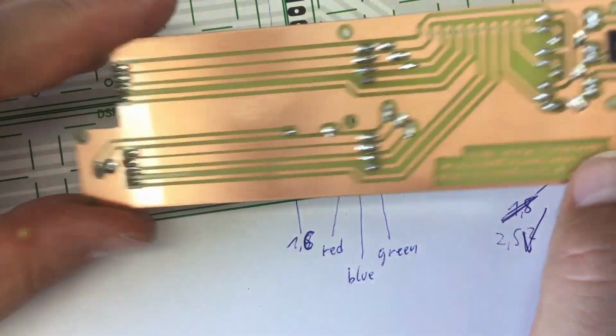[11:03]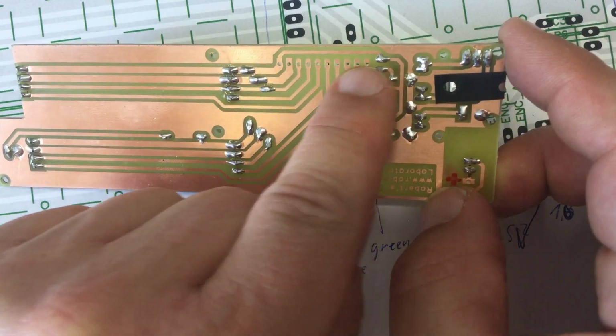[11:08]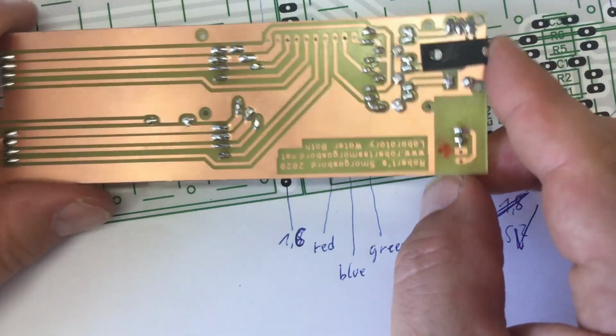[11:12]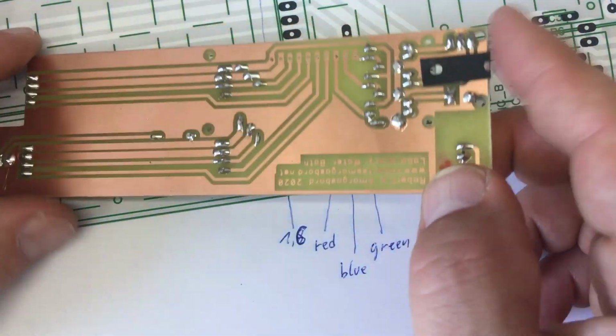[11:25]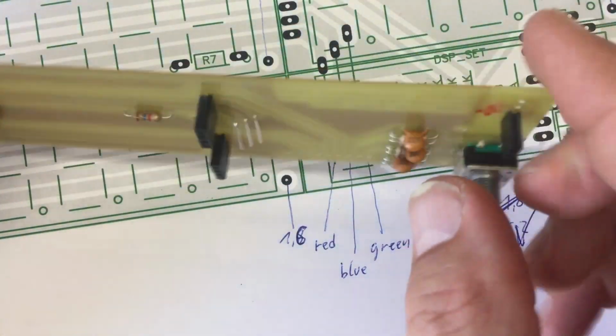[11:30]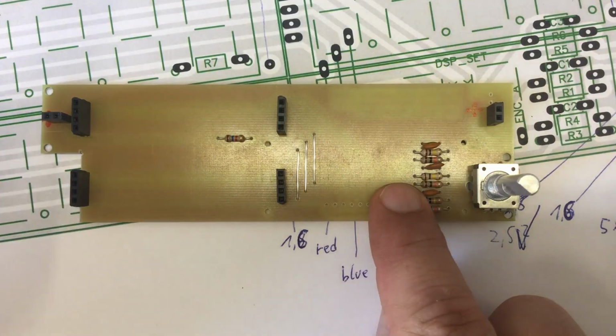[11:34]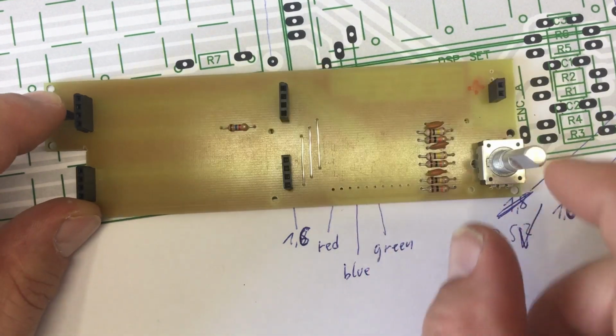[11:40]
Nothing else. There will be a flat flex cable or something going in here at a later point, and also a cable here which is connected to mains AC. So yeah, therefore 2 different cables will go in here, but for now I leave them out because this would make things a little bit clunky, hard to handle. Anyway, there's an LED going here, indicating if there's power on the 5-volt rail, and there will be an LED here indicating if power is going to the heating element in the water bath.
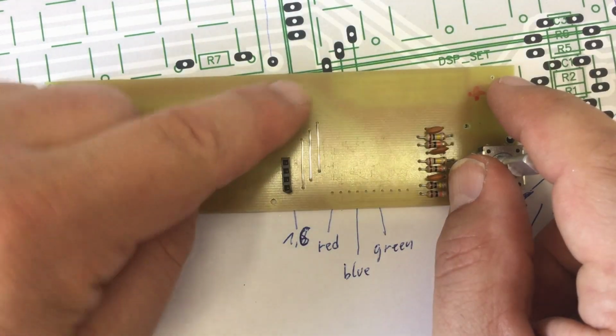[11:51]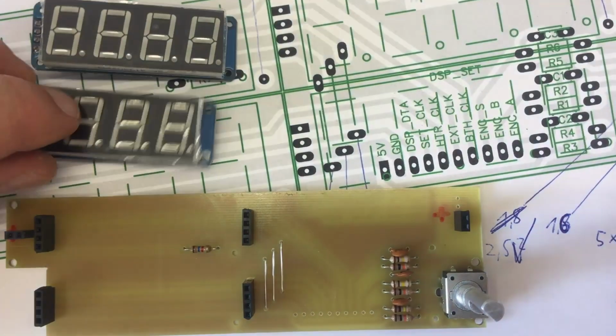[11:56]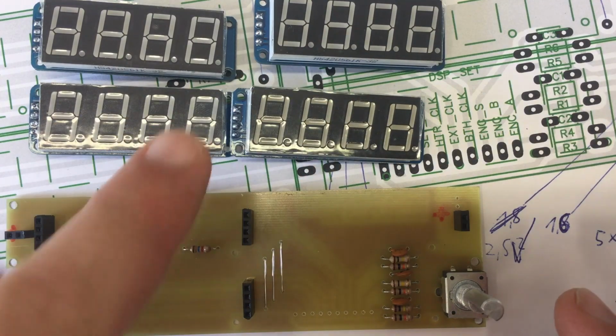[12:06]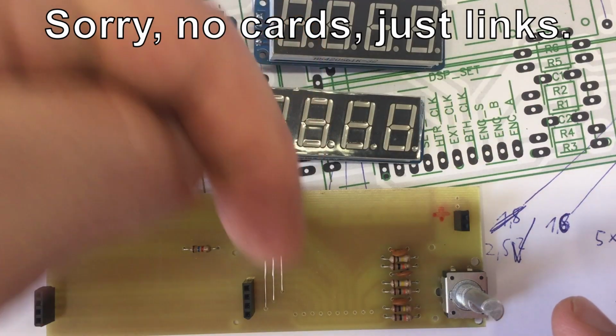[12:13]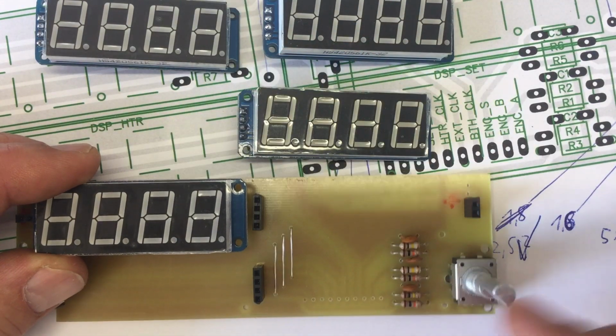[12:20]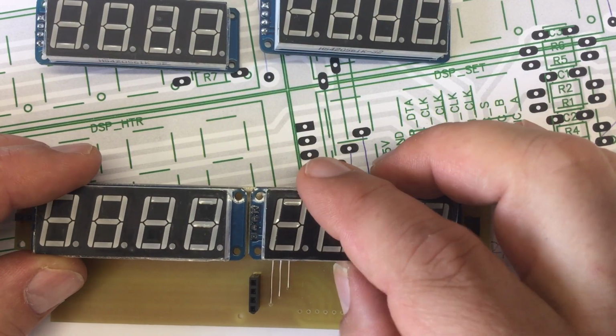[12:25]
And these 4 connectors are for 4 7-segment LED displays, and I did a video about those things too. In fact, 2. I don't know. Maybe I'm running out of cards. So maybe cards here, but links in the description. And these should go on like that. Yeah, there's not much spacing.
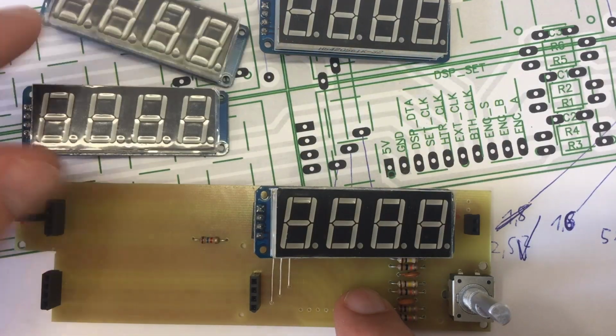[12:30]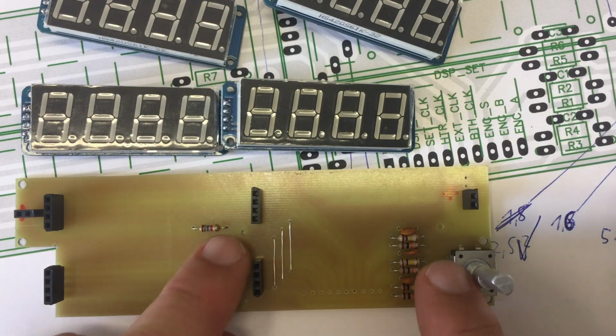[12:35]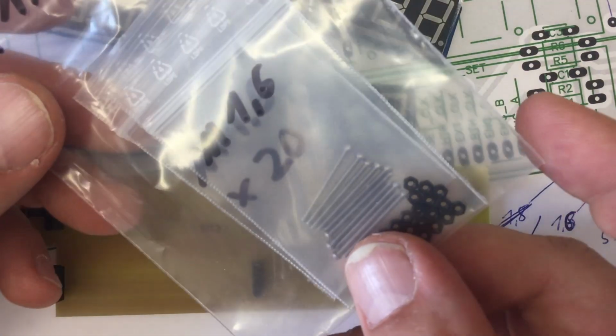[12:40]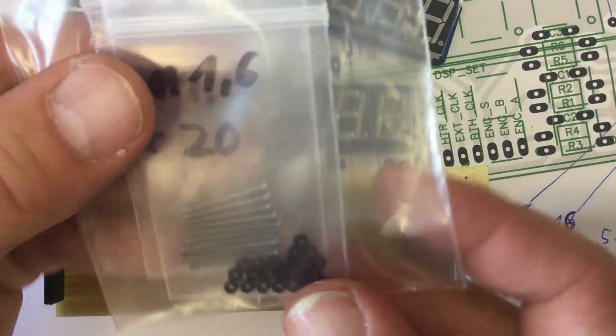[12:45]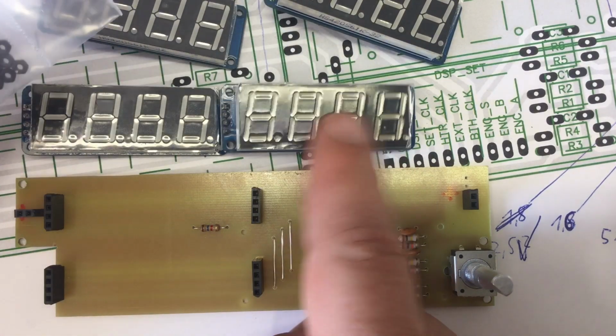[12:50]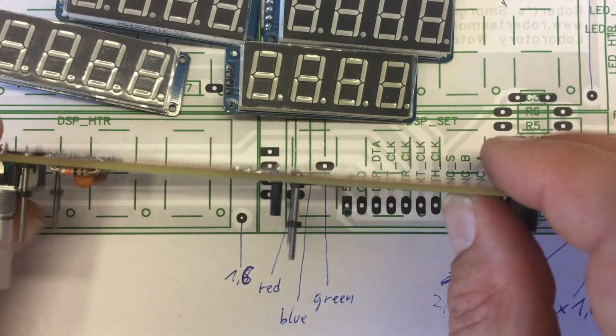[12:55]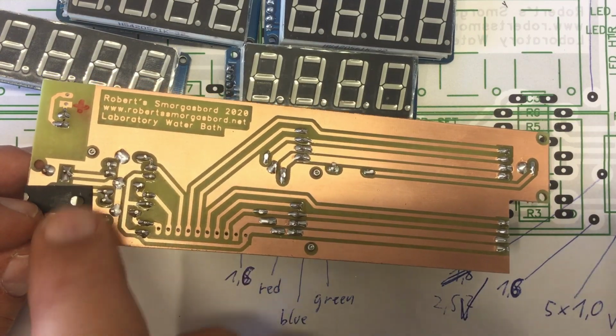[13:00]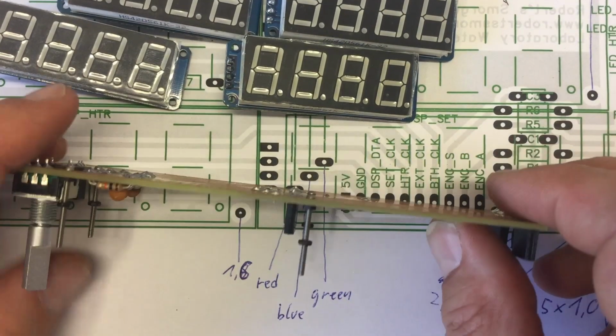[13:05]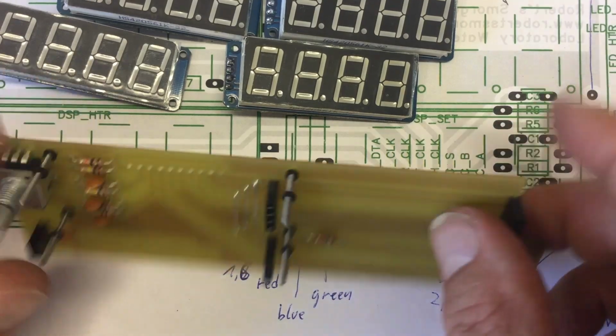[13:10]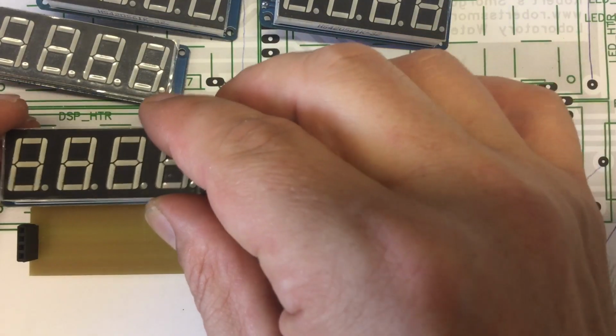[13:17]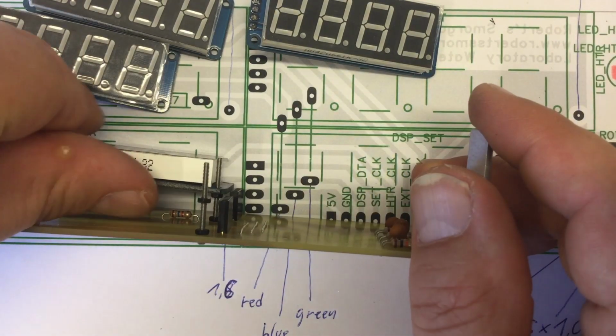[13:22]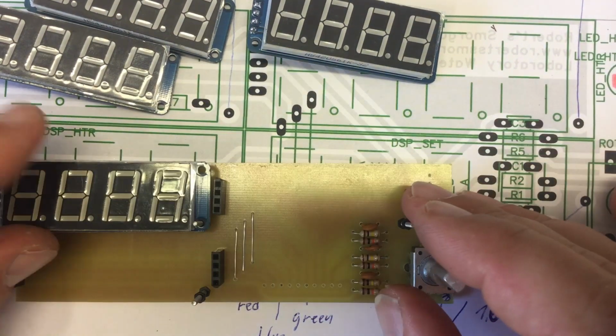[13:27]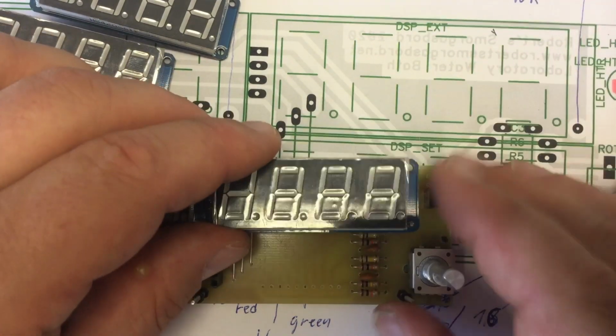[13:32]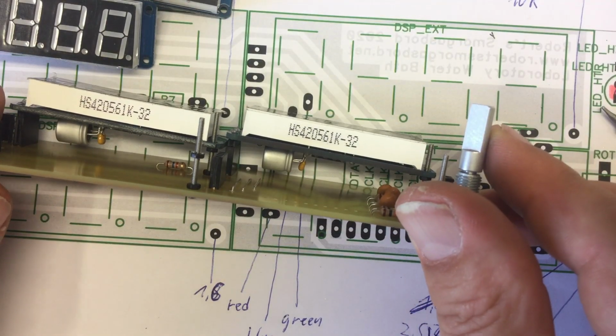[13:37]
And to give them a little bit of mechanical rigidity, there are these holes here. Okay, and there come very little M1.6 millimeter screws into play. So let me attach the screws to the board and then we attach the displays. The screws are in. And please note, there is also no electrical connection to these screws. And there is, on each screw a second nut, which I hopefully can use to adjust the height at one end of all the displays until they are all level. And that's basically what I will be doing now. And I come back to you when everything's assembled.
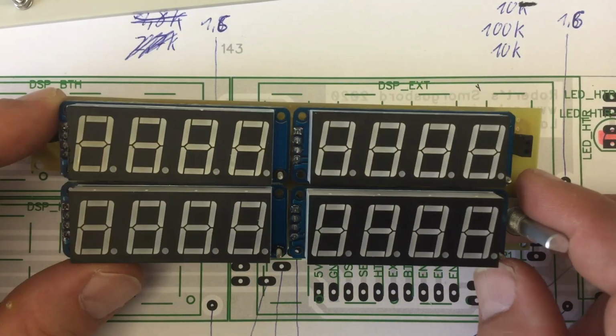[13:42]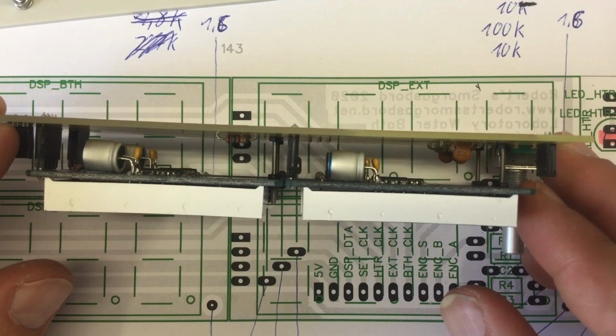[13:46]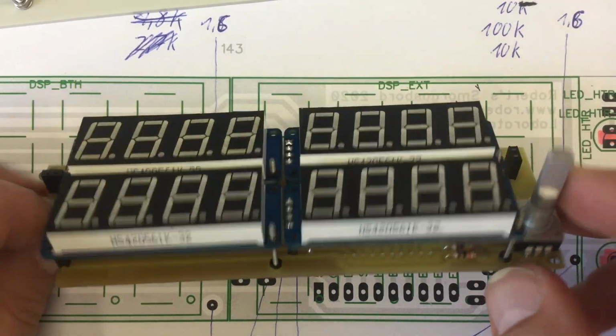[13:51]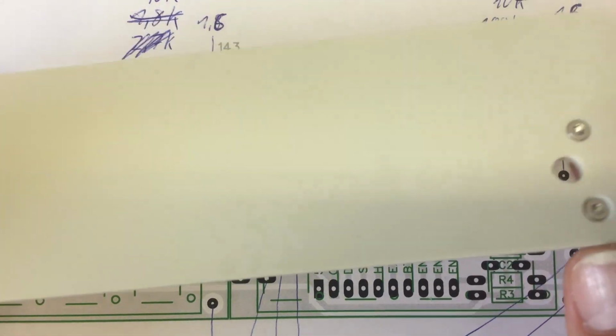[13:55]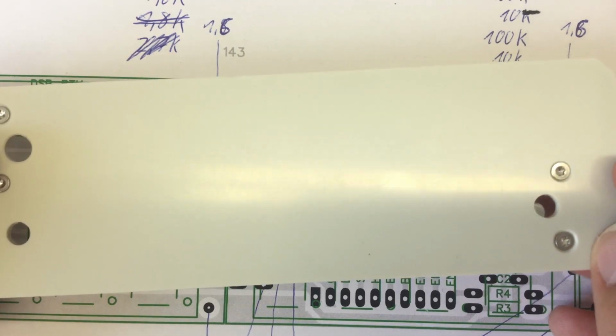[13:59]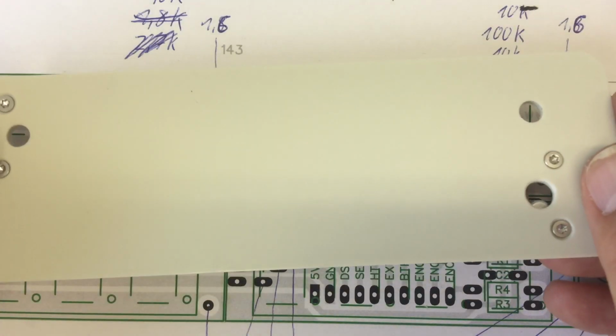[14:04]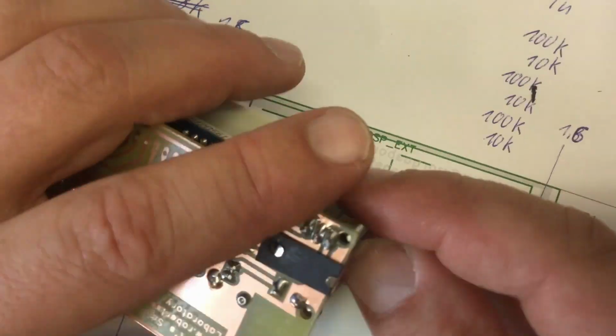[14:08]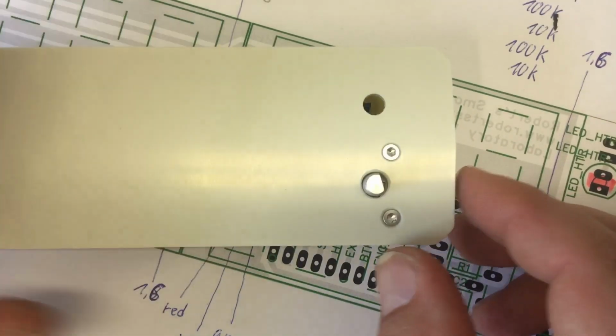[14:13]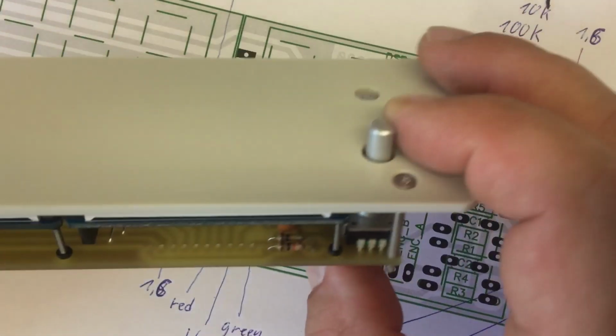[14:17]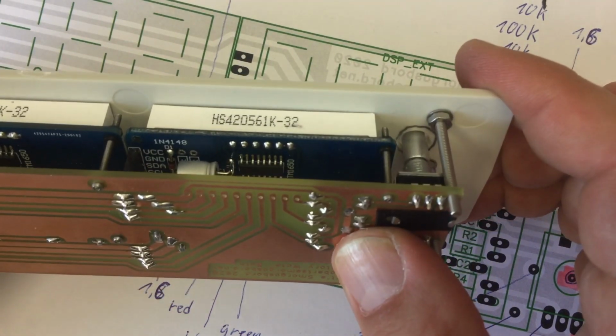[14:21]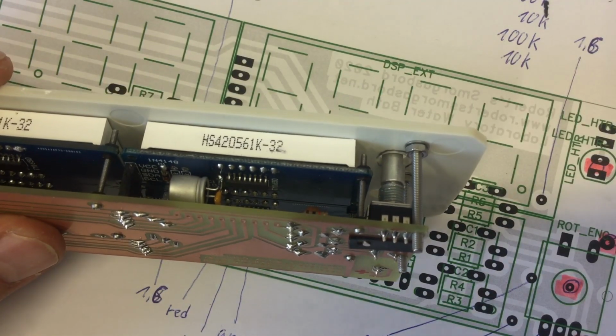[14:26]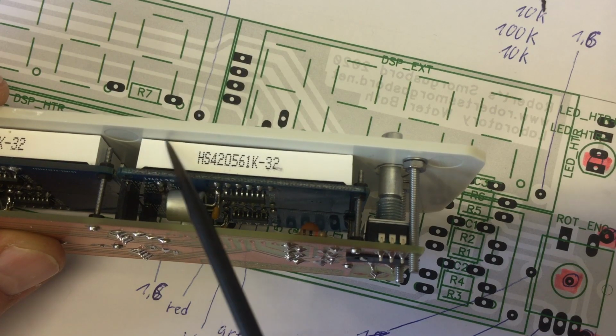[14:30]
With all the displays on, this is getting quite a heavy and massive affair here. And we can now pre-assemble the whole thing with the front plate, the right way around, of course. So that looks almost good. The only problem is, of course, I now need holes, but pre-assembled like this, I can now mark where I need to make the holes. Instead of relying on the measurements of these Chinese modules, I'm marking it as is, and then I will cut the holes. Wish me luck.
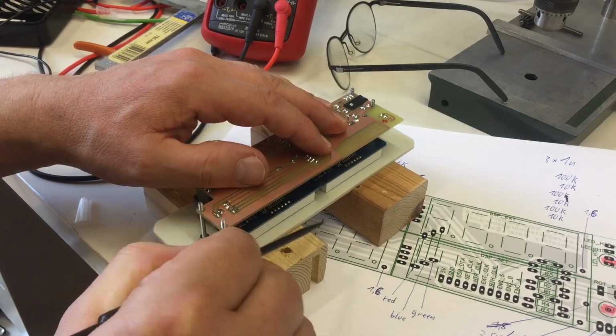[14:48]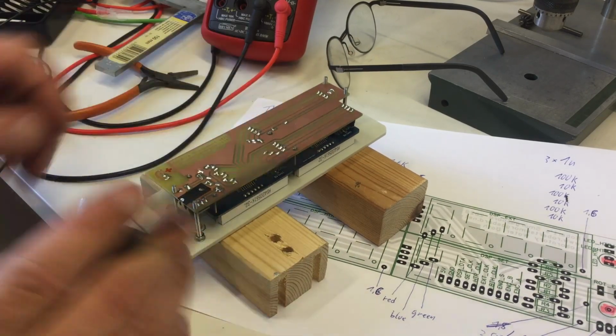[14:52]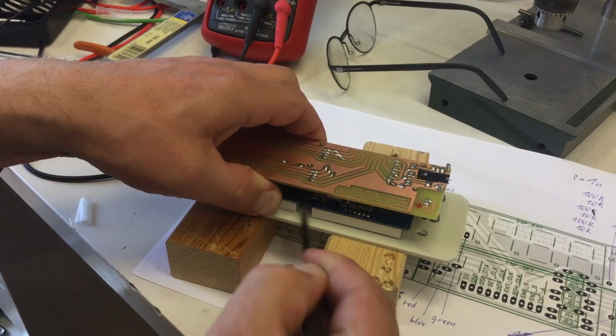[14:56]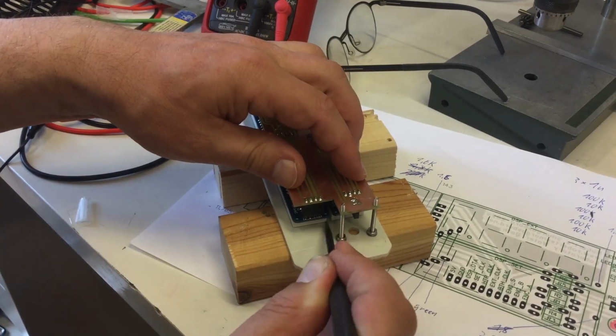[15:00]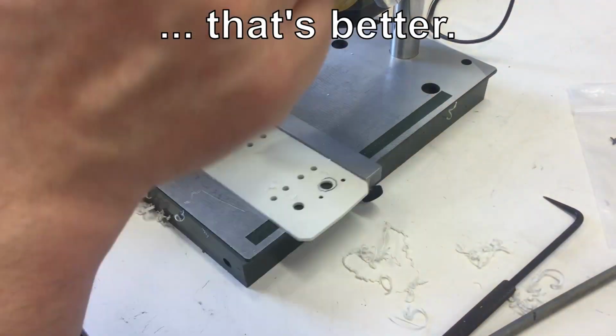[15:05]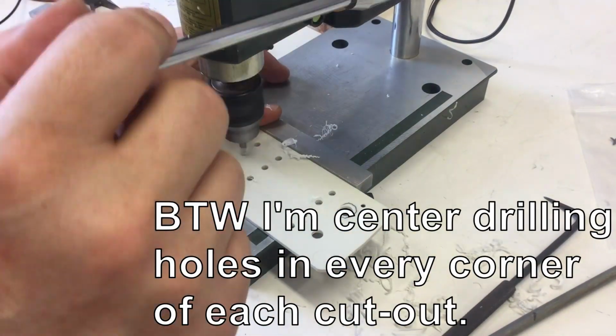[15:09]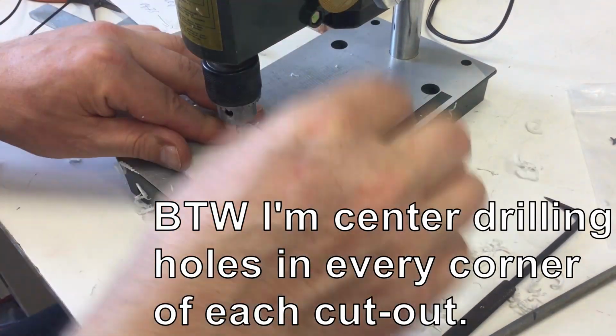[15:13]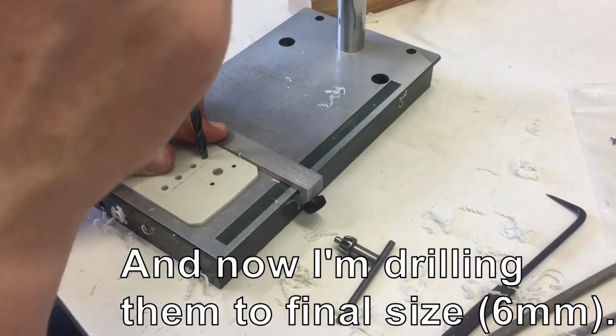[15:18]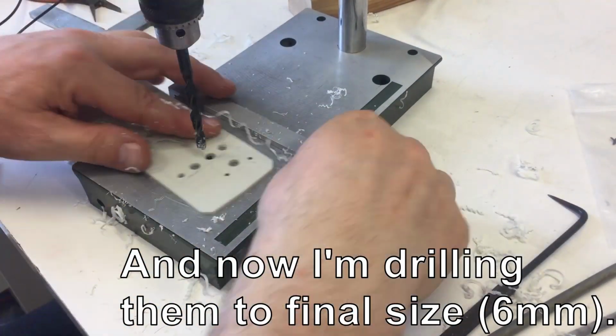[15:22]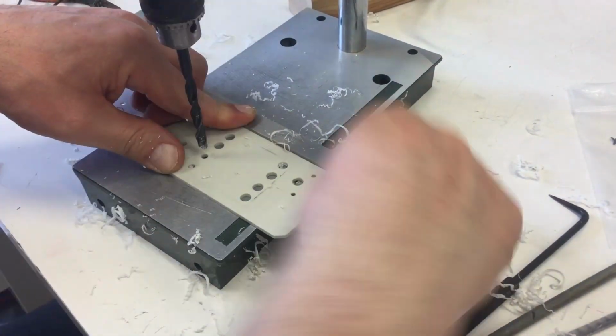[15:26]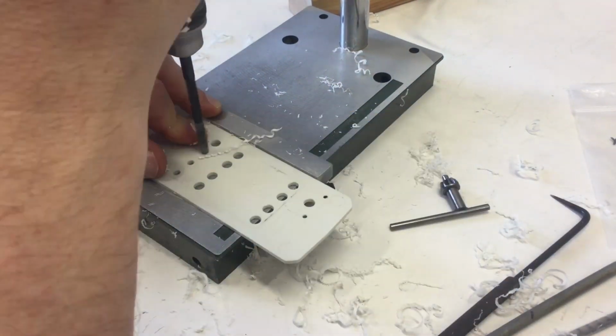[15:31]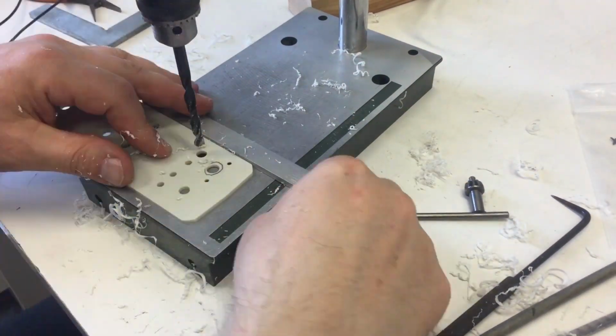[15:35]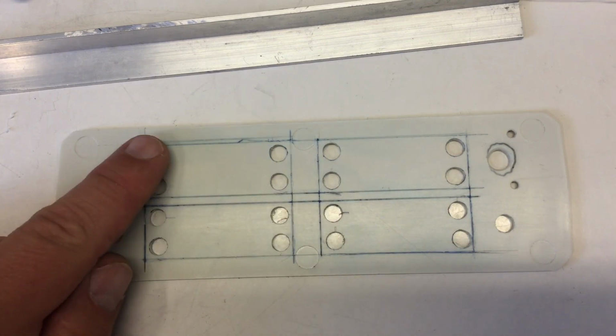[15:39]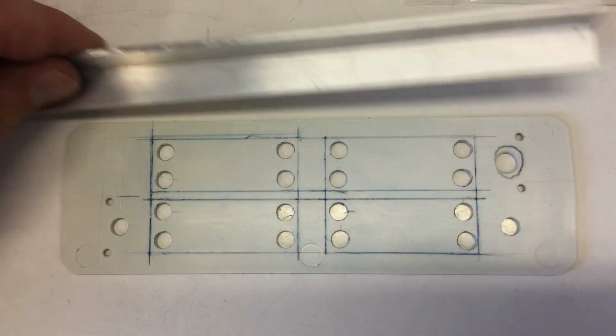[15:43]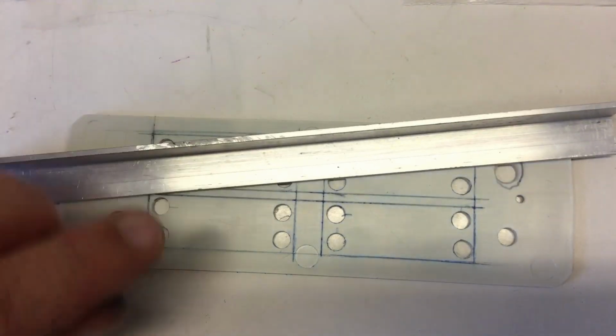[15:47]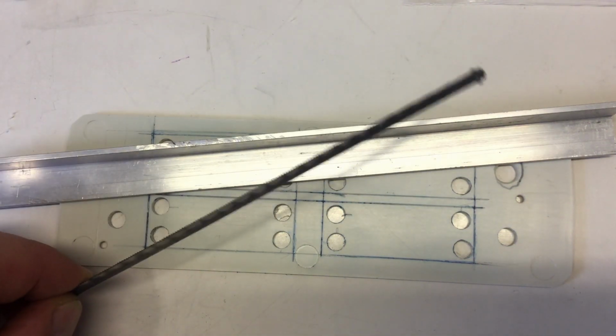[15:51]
I drilled a hole in each corner of each cutout, and I will now fence each line off and saw it by hand.
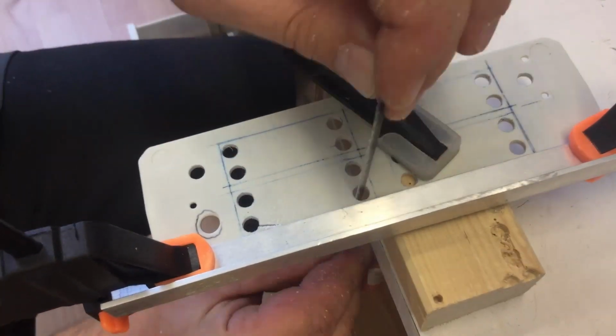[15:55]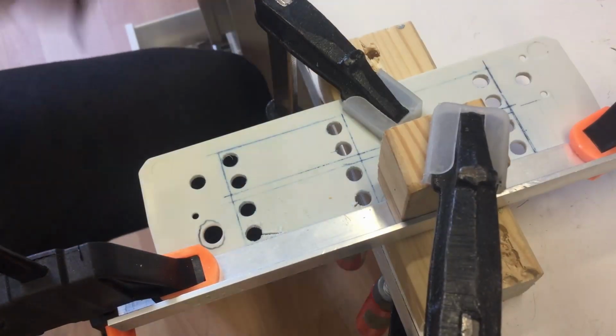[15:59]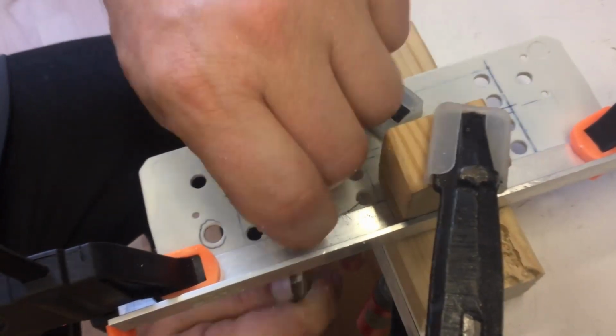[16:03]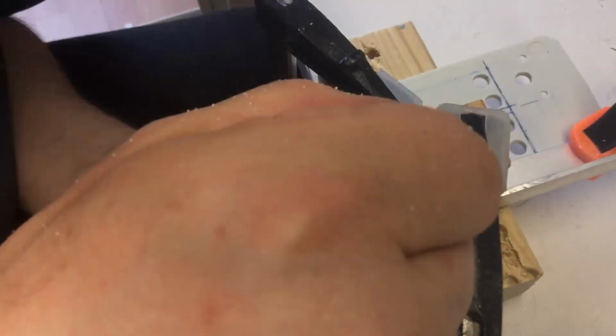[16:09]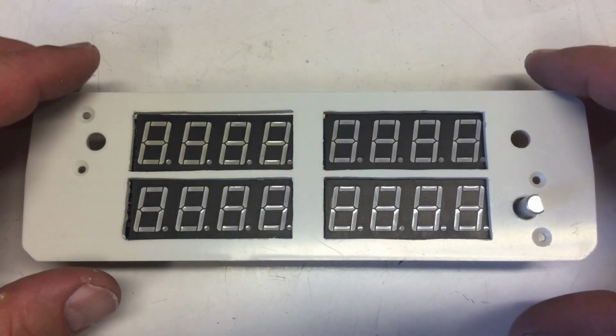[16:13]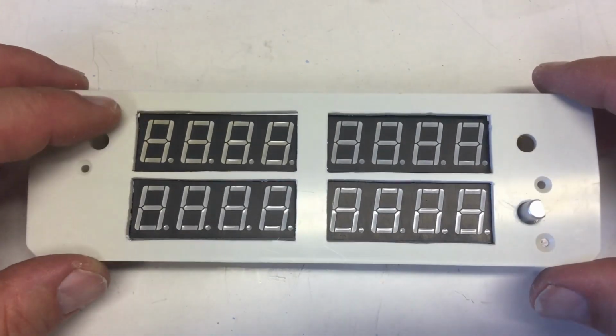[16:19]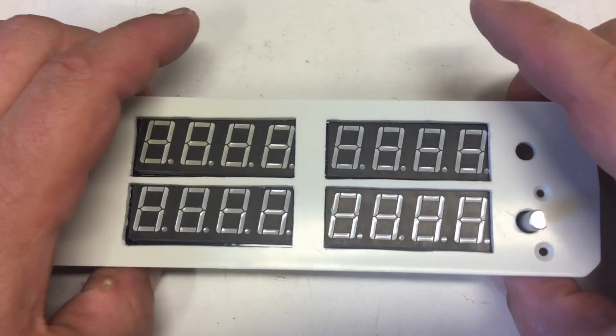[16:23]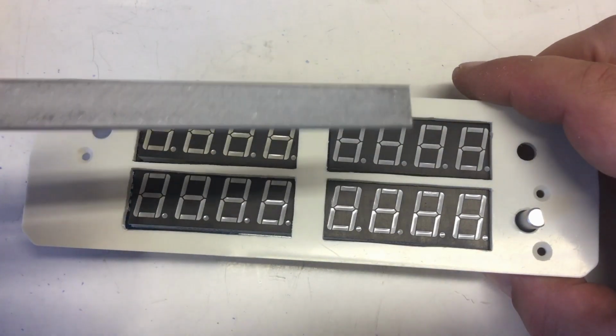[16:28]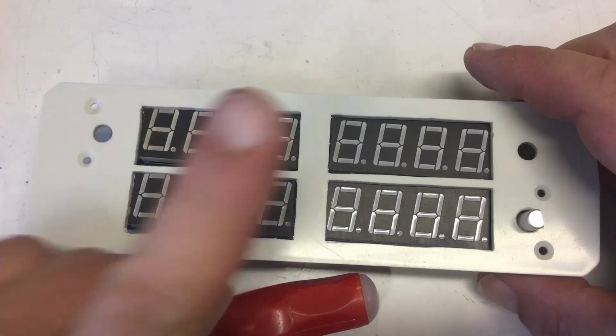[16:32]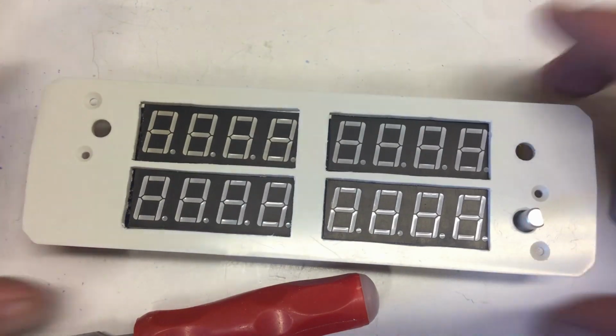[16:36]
Quick update in between. We're not just there, almost, but I guess I have to use the file and the fence a little bit more. Come back to you as soon as I got it to fit.
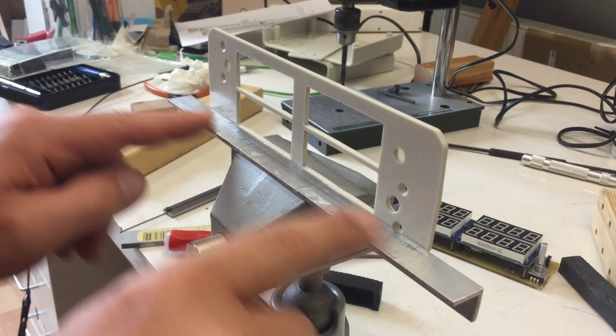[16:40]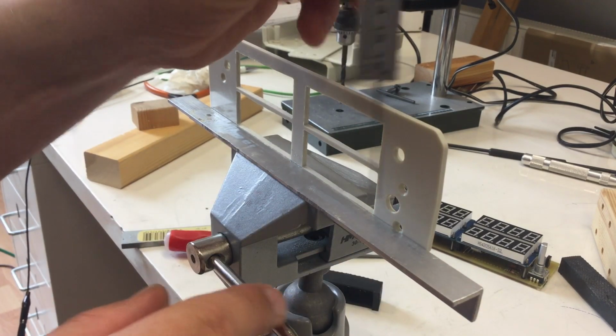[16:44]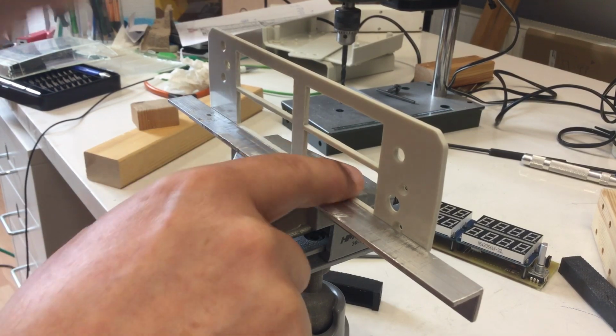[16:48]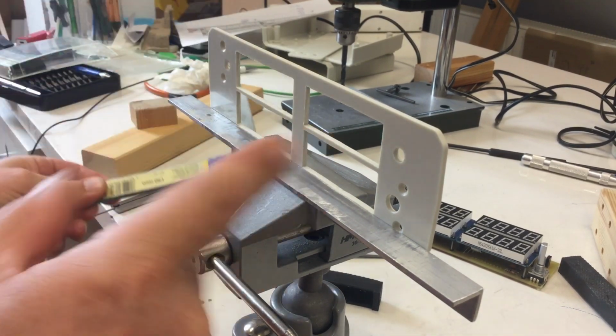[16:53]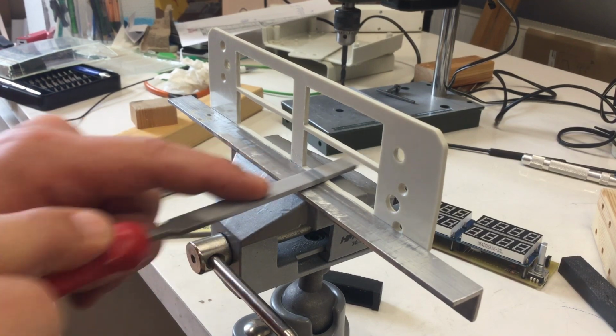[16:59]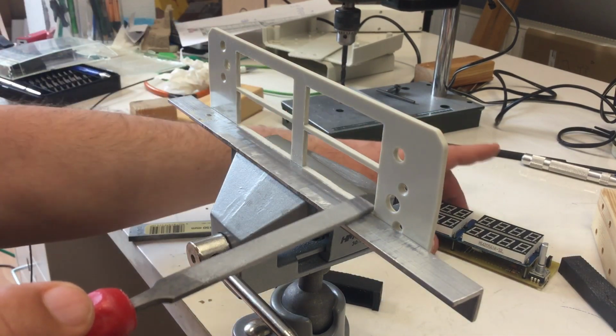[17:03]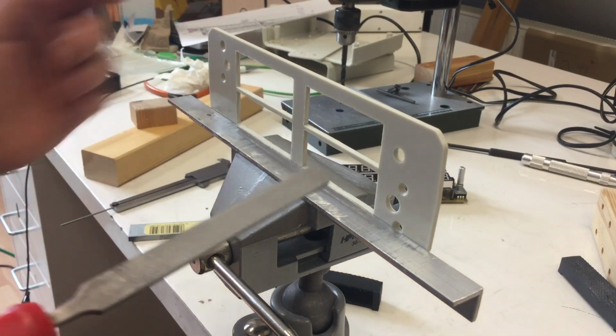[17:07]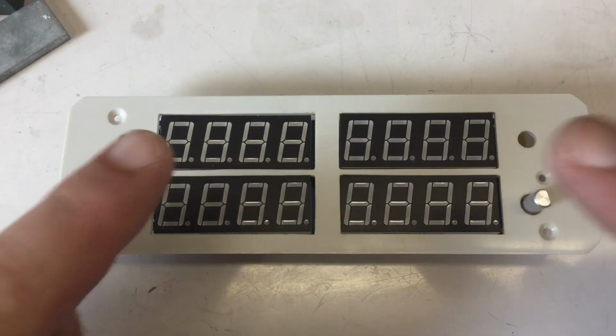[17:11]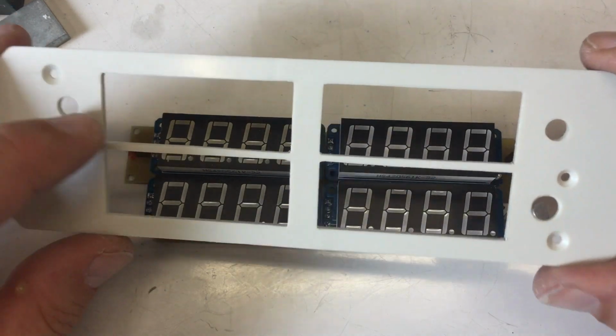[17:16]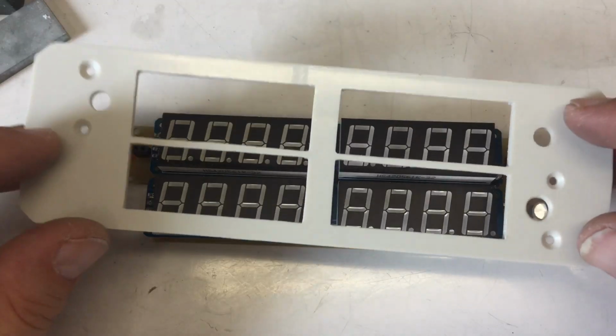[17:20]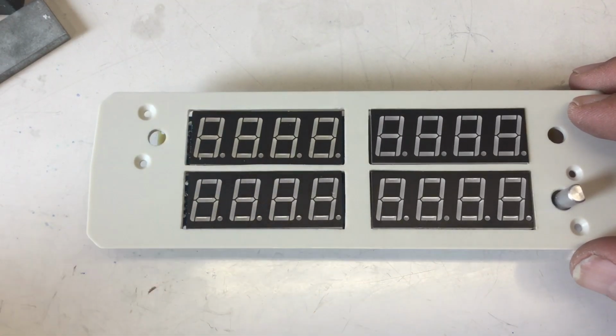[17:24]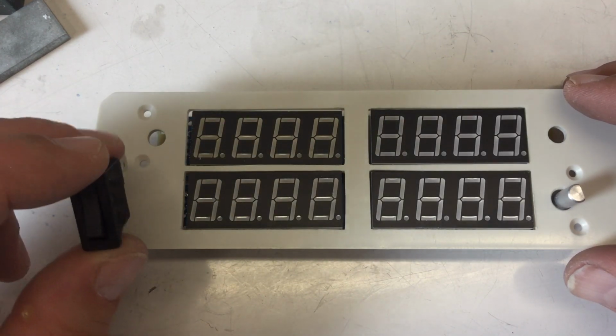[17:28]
There is no special sauce to get that done. I mean, you set up the fence and either when it's in parallel with the caliper, you make sure it is parallel, or if it's at the right angle, you just align it as good as you can, and then you file off a few tenths of a millimeter, and then you check again if it fits, and repeat, repeat, repeat until it fits perfectly, or well, at least good enough. You could still do some work here, but it's fine. And I still need another cutout here for the AC mains power switch. So let's do that now.
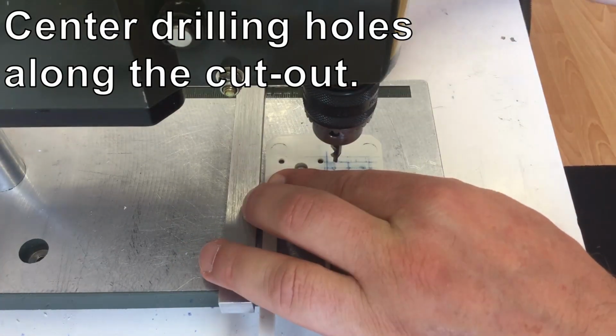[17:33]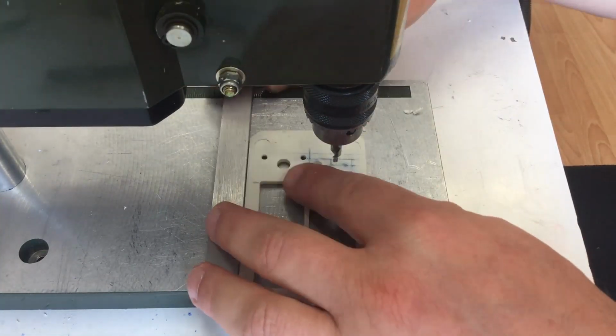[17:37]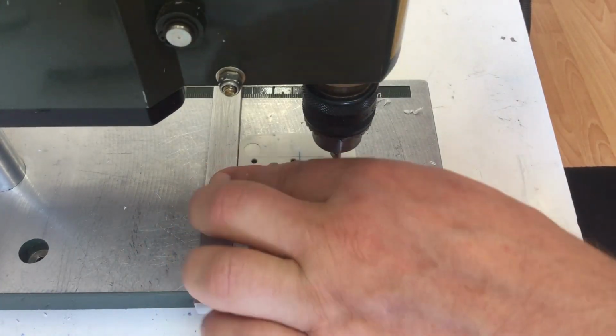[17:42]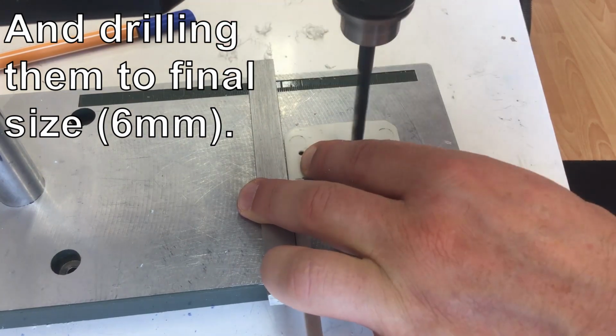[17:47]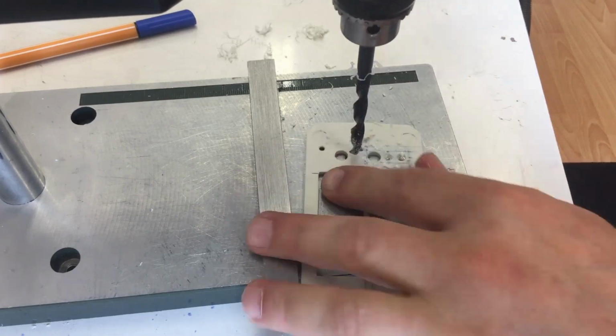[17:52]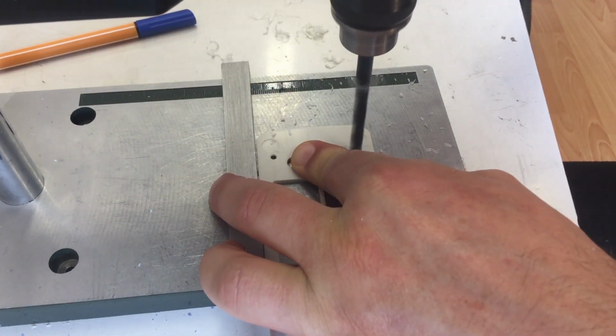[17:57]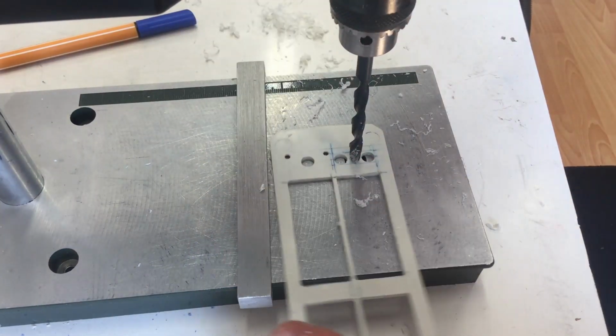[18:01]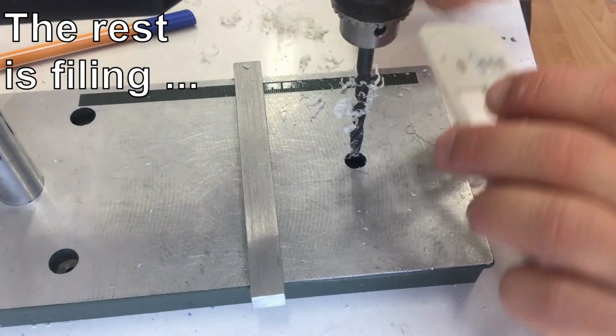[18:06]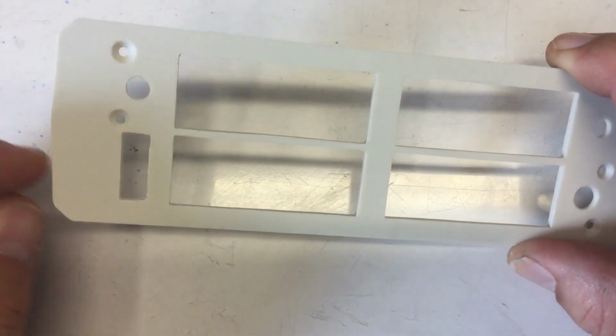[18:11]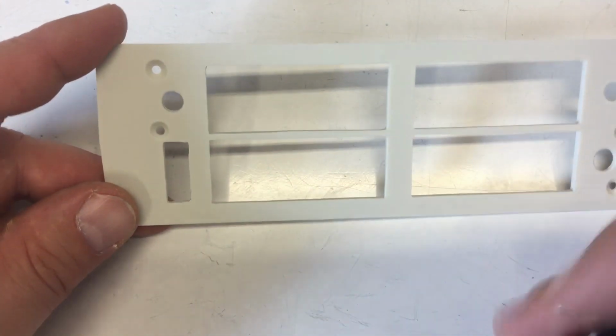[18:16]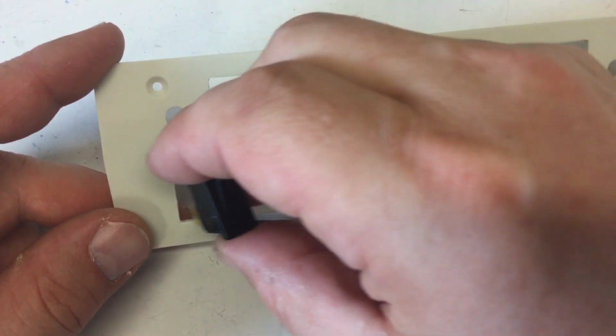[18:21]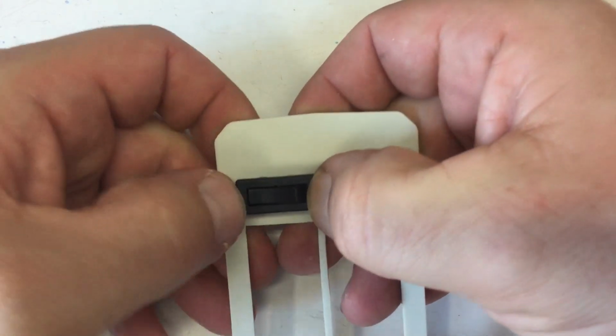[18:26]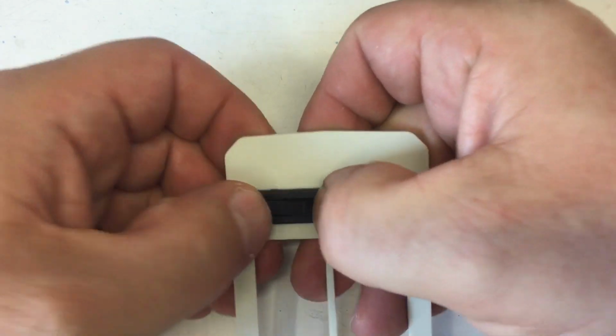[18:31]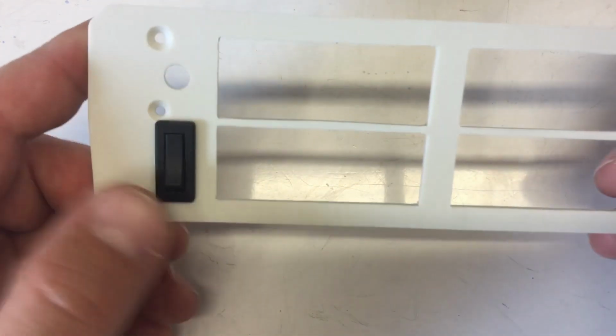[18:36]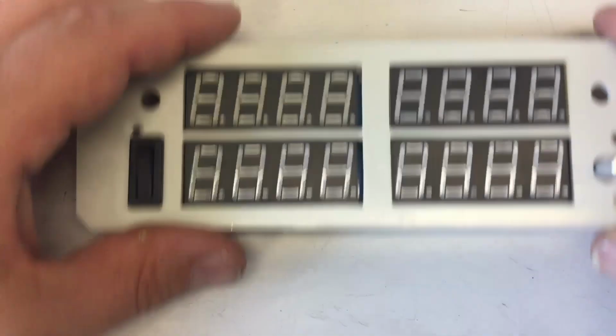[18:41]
Okay, that was only a little bit of filing after I drilled the 6 holes, and the dimensions are not so critical because it's a snap in, and this is kind of forgiving because it has a frame. And I was okay. Oh, got lucky there, huh? Okay, and now we can put everything together, I guess.
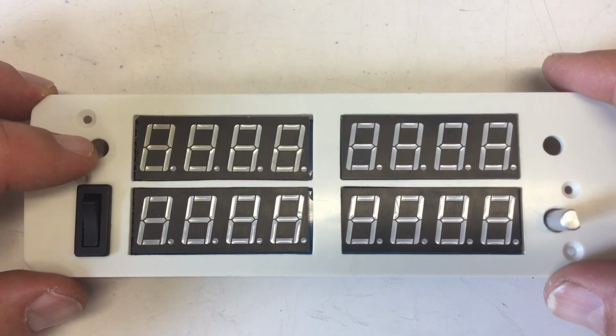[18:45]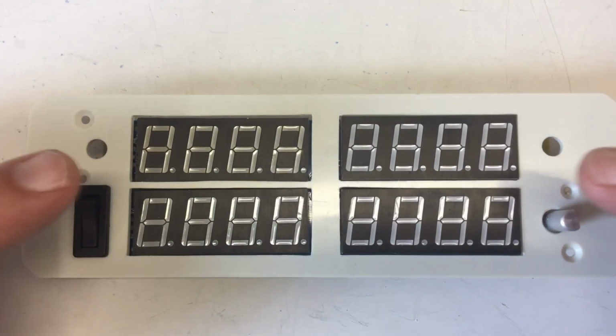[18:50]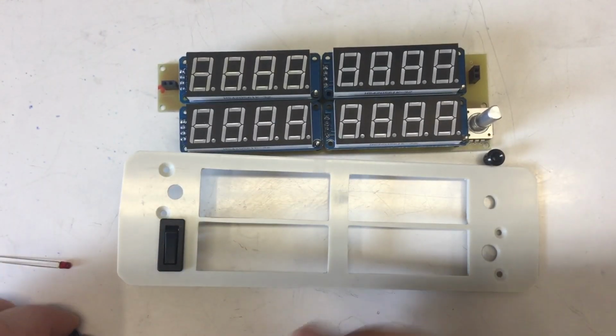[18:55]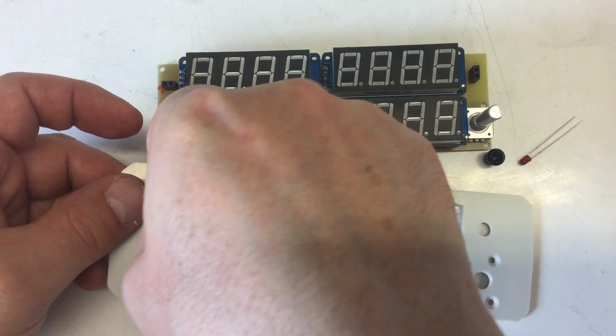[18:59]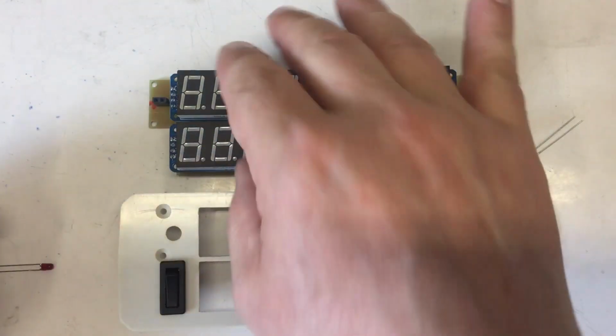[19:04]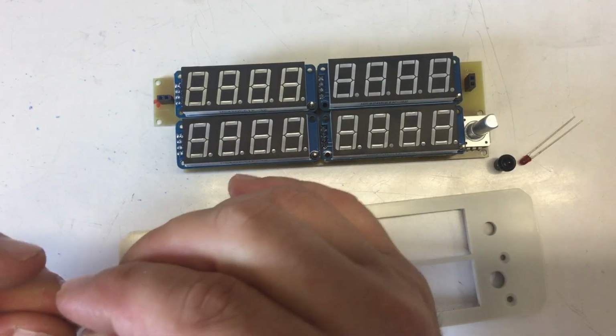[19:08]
Oh, forgot something. 2 LEDs. Just a sec. Okay, and I have these LED holders here, which are also snap in. And I have to watch the orientation here. So this is plus. So the LED goes in here, and plus is on the right side.
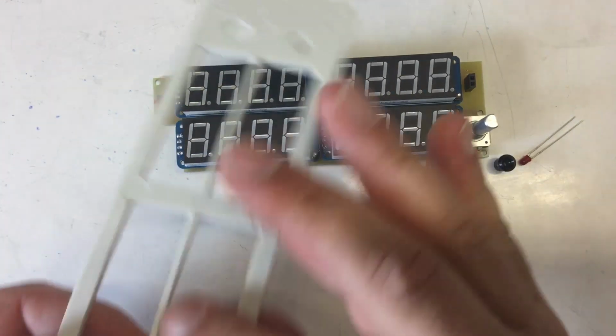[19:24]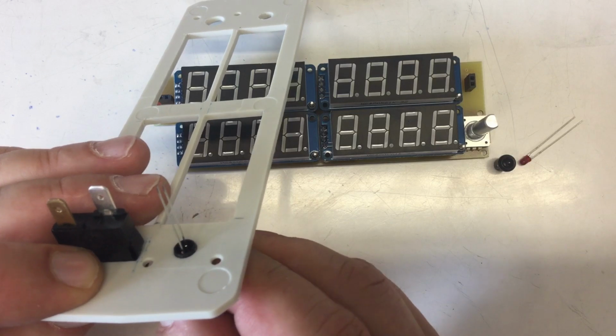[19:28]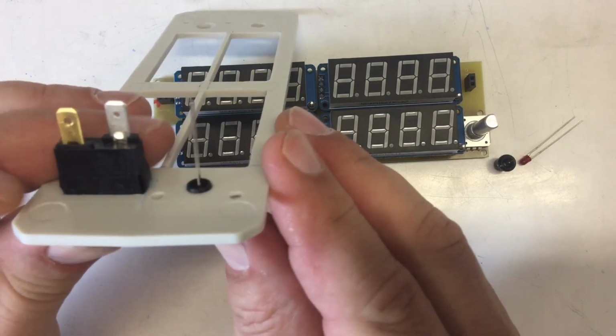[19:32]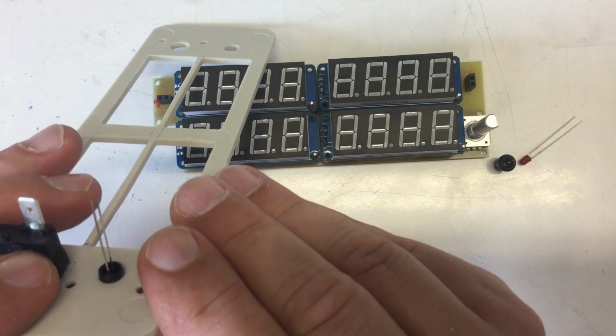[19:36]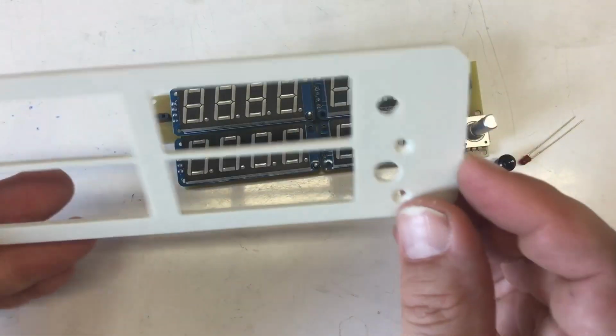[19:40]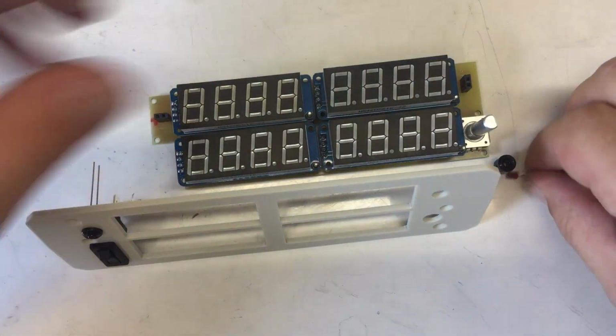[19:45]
Let's see if we get this right. Rotate it a little bit. Yep. That looks all right. Okay, 1 LED, and the other LED.
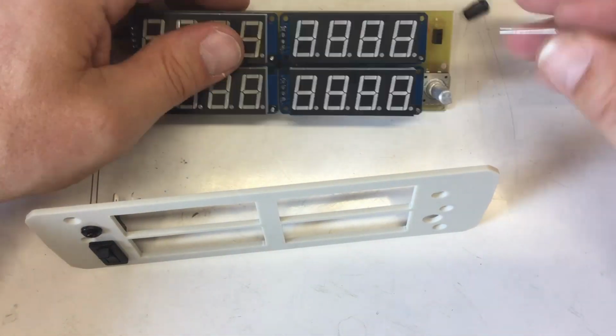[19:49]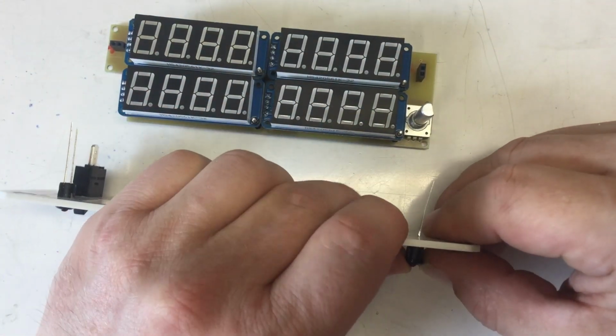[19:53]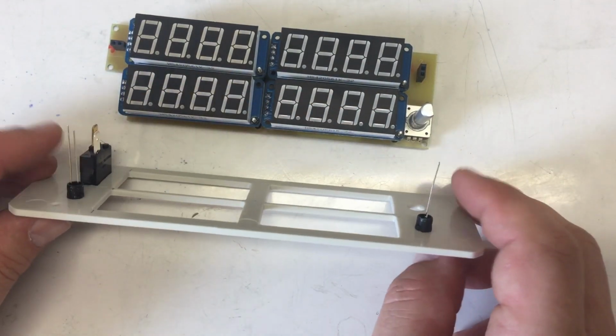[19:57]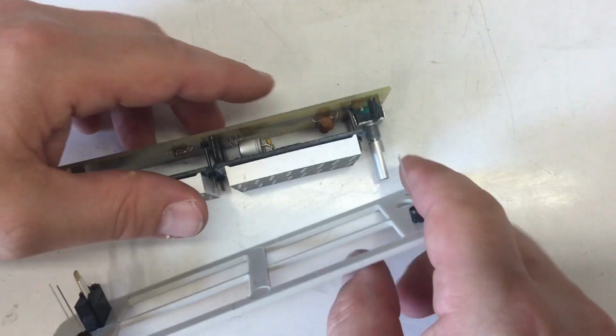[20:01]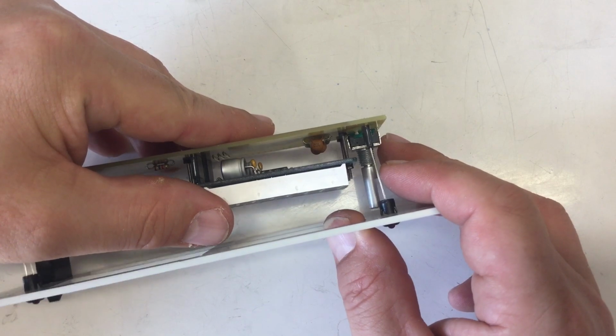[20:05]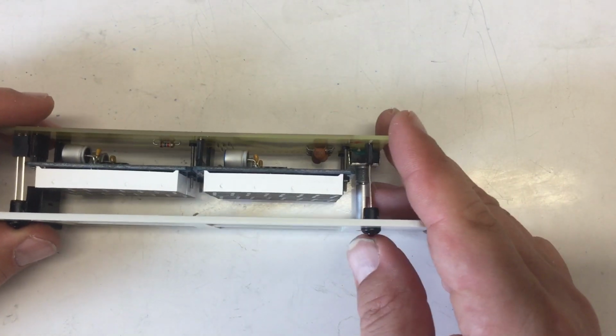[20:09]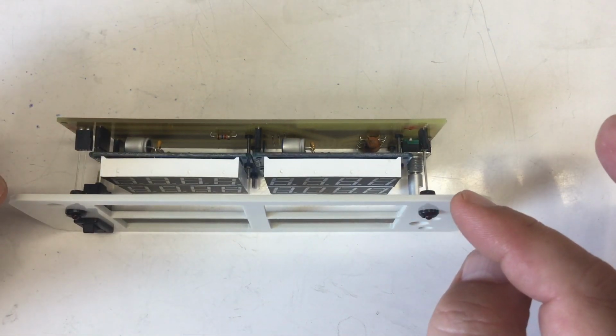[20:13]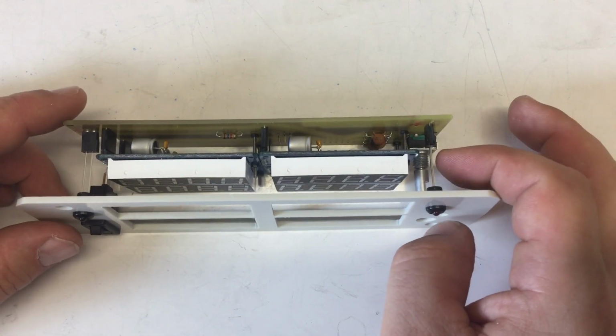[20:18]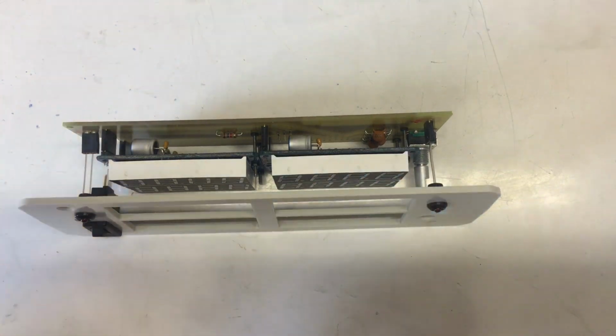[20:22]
And now of course the leads are too long, so this will obviously go in here and in here, but I will have to shorten them while I screw everything together. But you don't have to watch that. Snipping off millimeter by millimeter until everything fits. So I'll see you when I've put everything together. Finally.
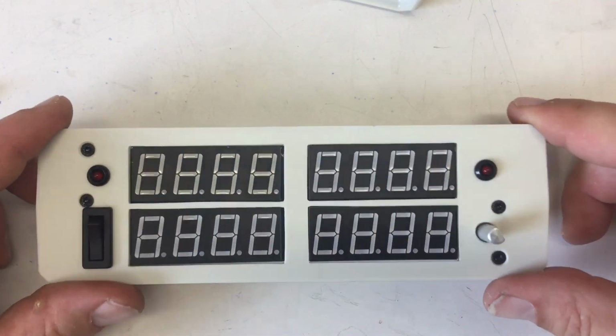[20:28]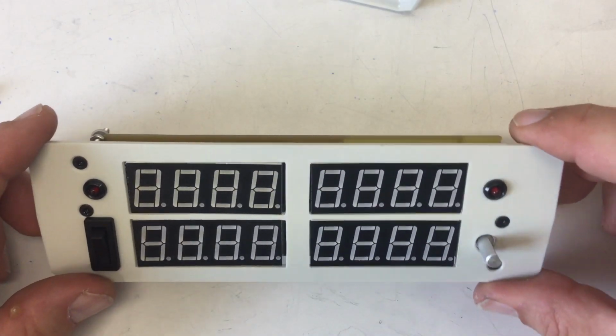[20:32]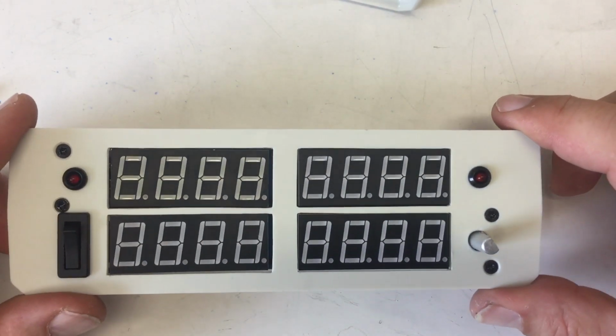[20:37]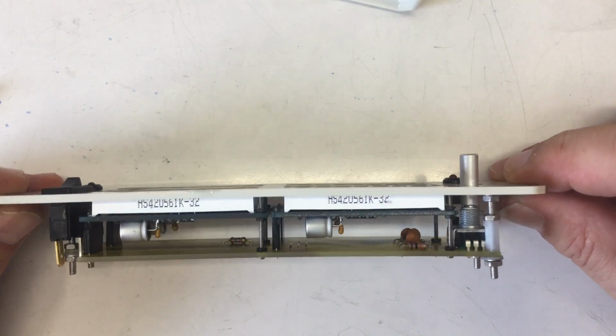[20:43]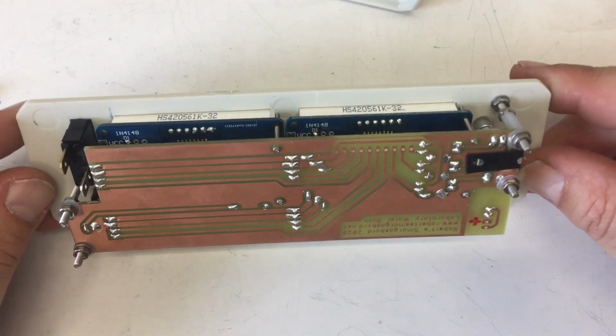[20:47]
It's done. Okay, the knob is missing, but I have to order that. Yeah, I even blackened the screws just for the looks of it, so everything on the front plate is black. And it's a dense affair because there's not much space in the case.
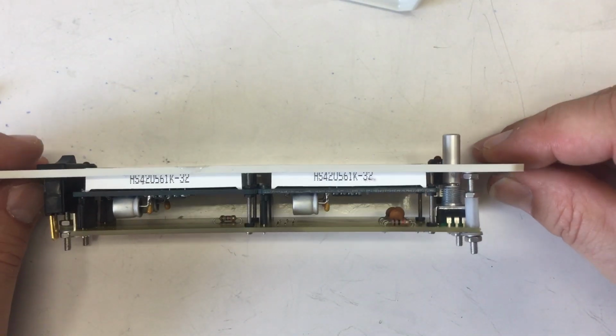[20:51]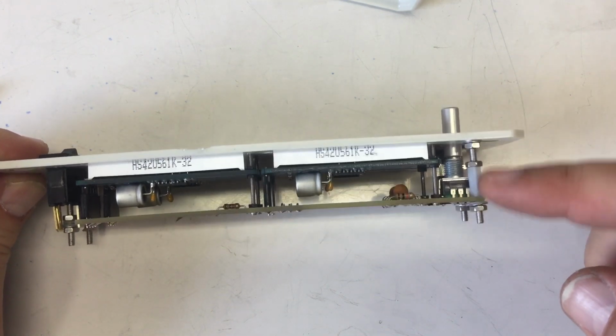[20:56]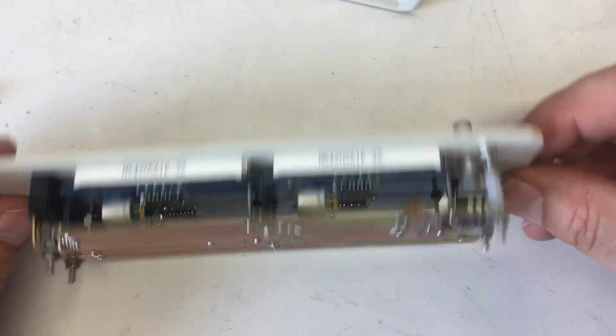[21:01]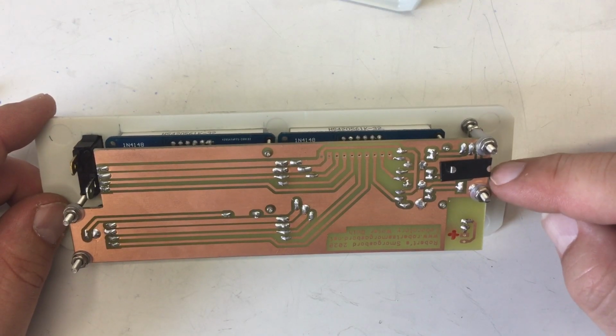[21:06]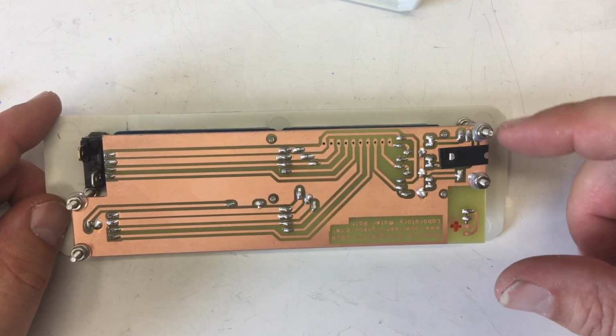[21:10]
Anyway, word of note, the isolation here on that screw, and I measured it. I made absolutely sure these screws have no connection whatsoever to these pins here and to that copper. If I had space, I would place the screws with a little bit more distance, but I hadn't. Okay, and I can't go into this area because this area is connected to mains AC.
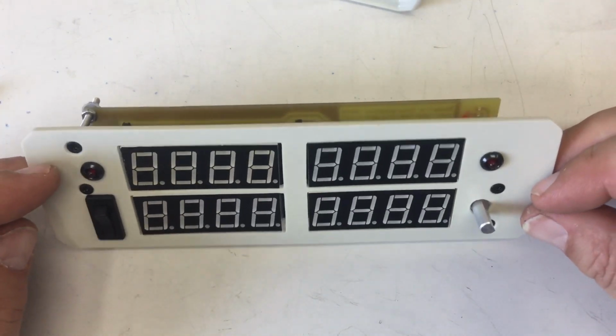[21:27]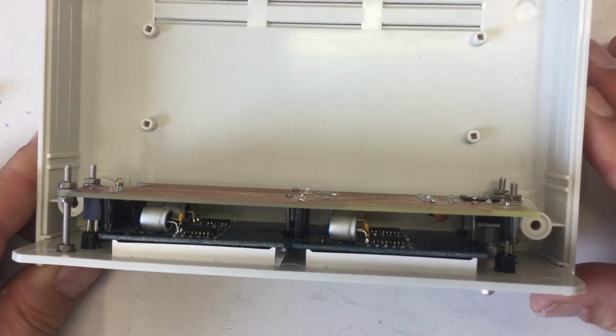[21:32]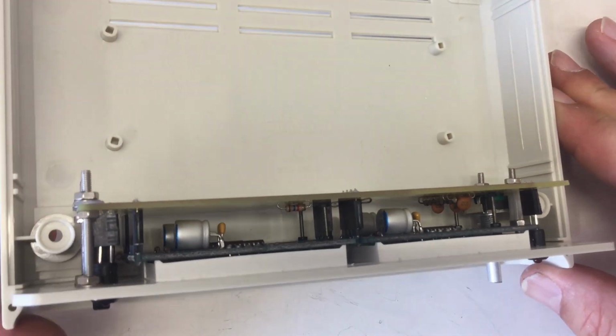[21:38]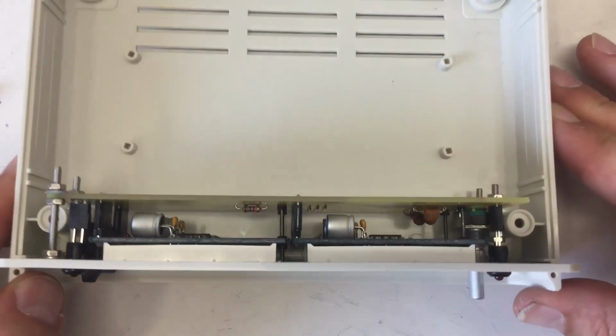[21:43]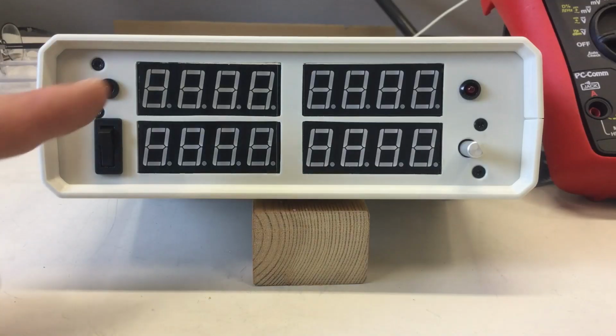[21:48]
Anyway, let's put it into the case and have a look-see. And yeah, slid into the case. You see, there was not much space I could work with. Yeah, I used every millimeter available to me, but I didn't want a bigger case because that would have been wasteful. And yeah, it's okay. Yeah, here the cutouts could have been nicer, but anyway, it looks acceptable. Anyway, let's try and light that thing up.
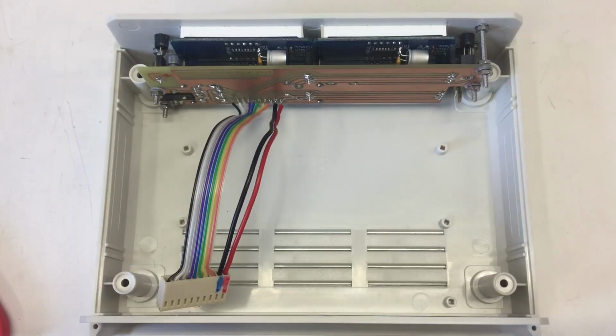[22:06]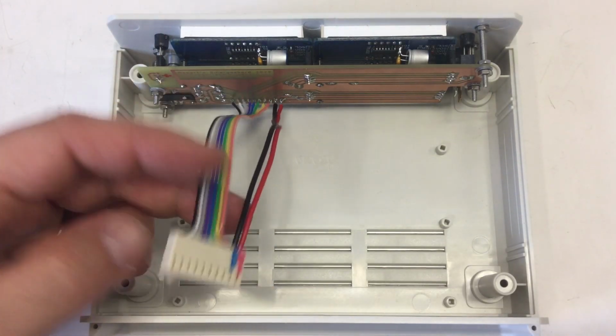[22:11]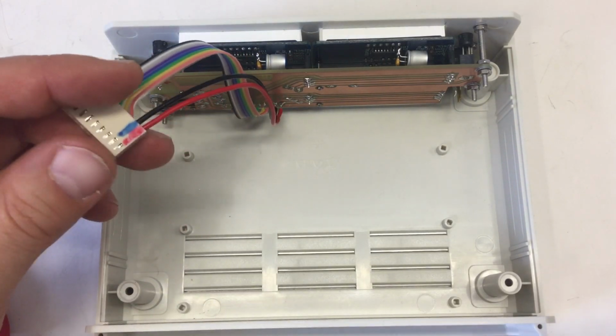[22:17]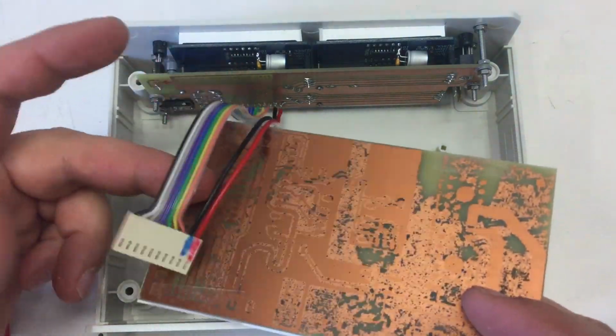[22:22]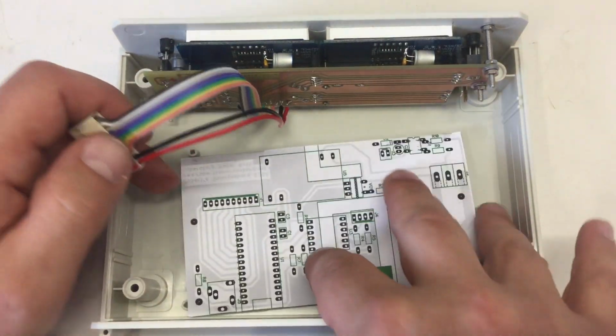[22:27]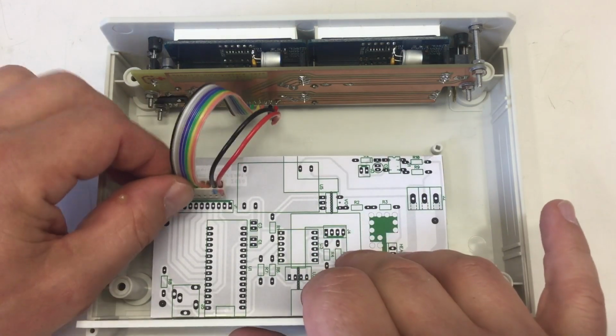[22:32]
But before I can light it up, I had to solder on a connector. And to dimension the length of the cables, I used the botched up controller board, my first batch of mishapped etchings. And I made a real printed circuit board out of it, so I know where my connectors go and how long the cables have to be. Okay, now let's write some software for the Arduino
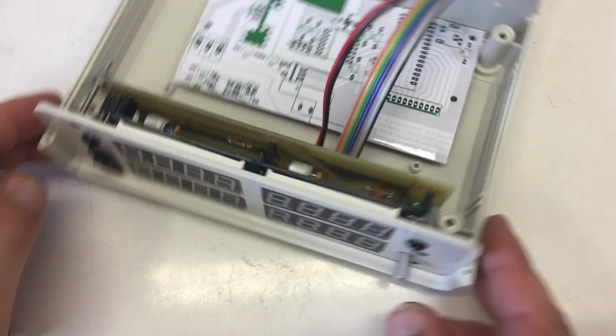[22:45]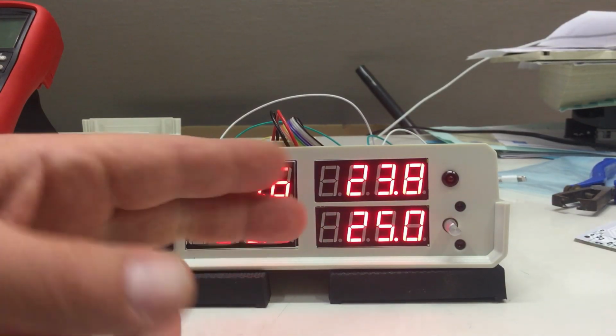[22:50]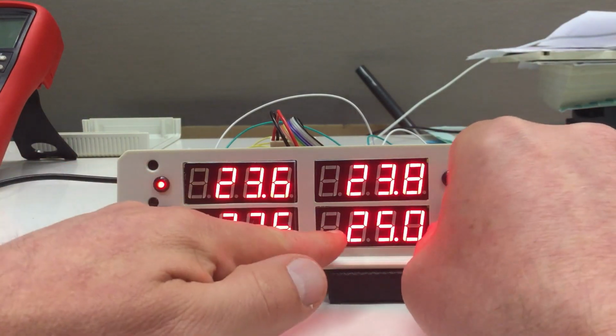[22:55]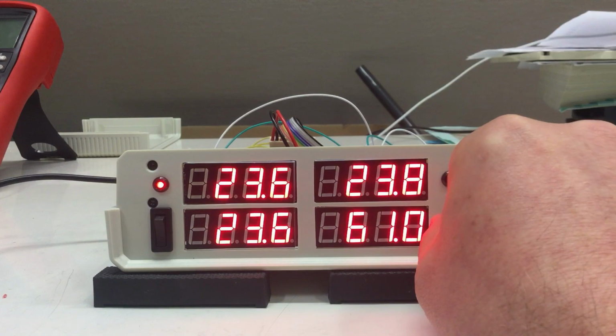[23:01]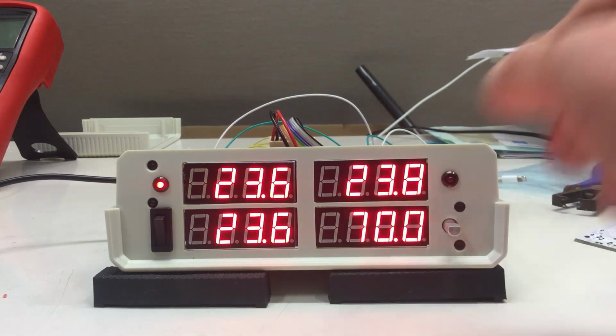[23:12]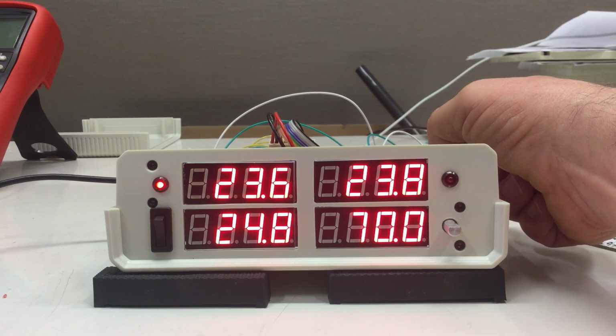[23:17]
and light these up. And they lit up, and they do have a function actually. I mean, the rotary encoder is obviously setting that display here. I mean, it's not perfect. I just hacked together some code. And these are actually displaying temperatures, and I have temperature sensors here at the back. And you can see temperature is rising, as is my confidence.
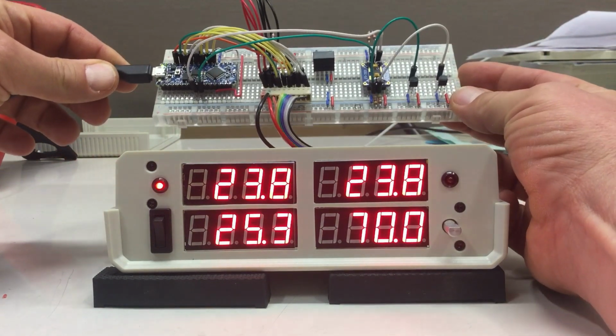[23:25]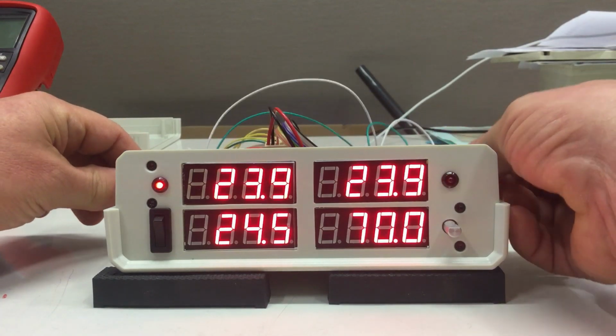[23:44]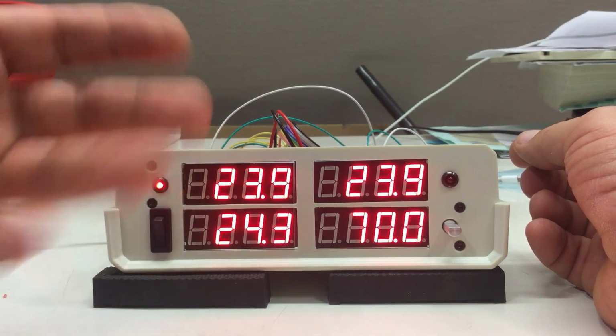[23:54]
And I take basically all that data from the temperature sensors I had on the breadboard from one of my last videos. Card. No, probably not card. I'm out of cards. But links. Anyway, I will spare you the code because it's well past 9 p.m. and it's atrocious. And we will have in a future installment in the series enough opportunity to go over the code again.
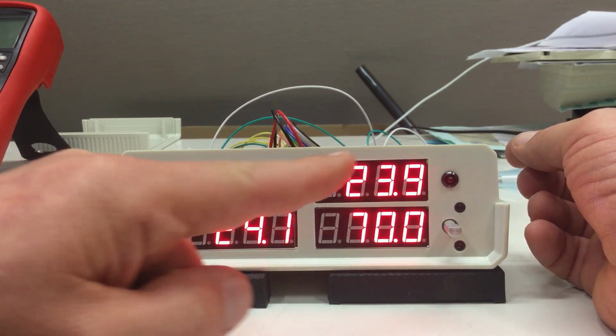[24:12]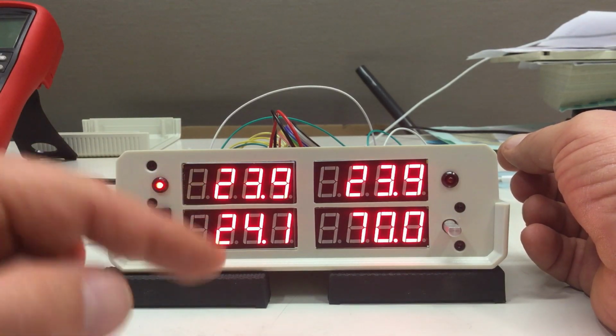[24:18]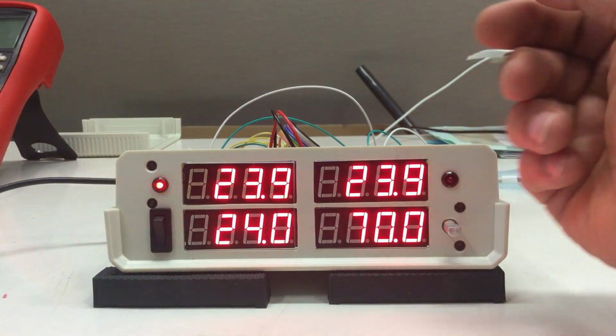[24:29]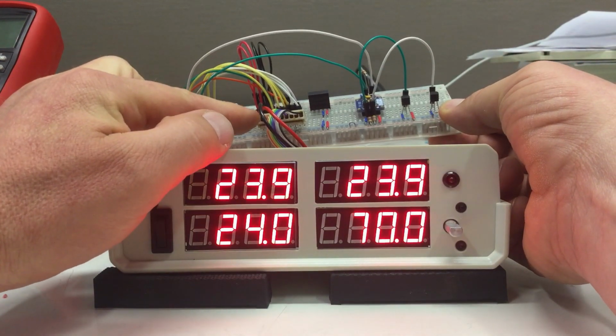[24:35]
To get here, it was not without a little, quite a big hiccup. The first time I turned it on, all displays stayed black, absolutely black. And after some debugging, first in software and then, before checking your voltages, check your connections, I noticed that the crimp connection of the data line to the displays was dead as a dodo.
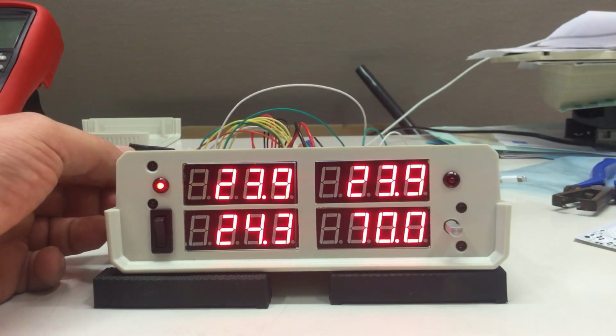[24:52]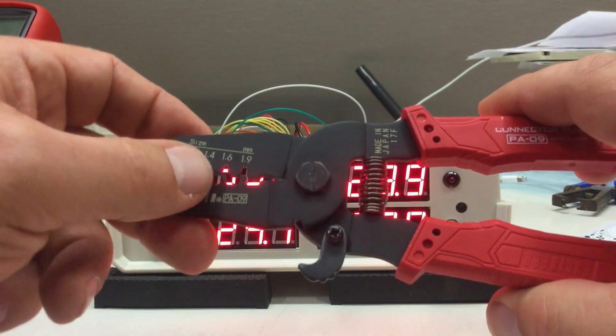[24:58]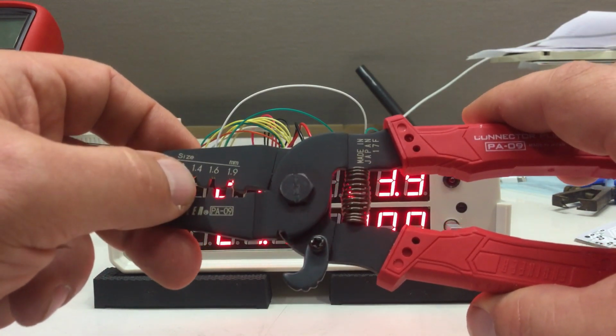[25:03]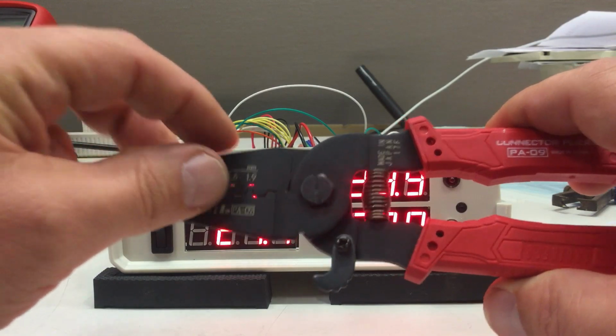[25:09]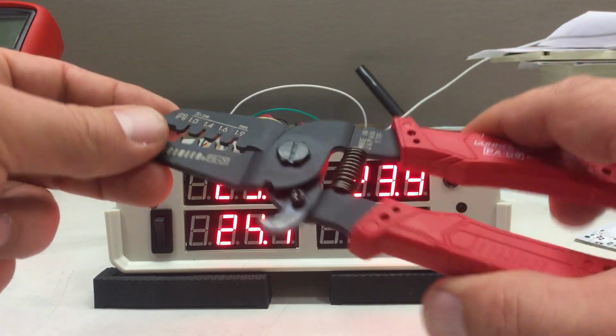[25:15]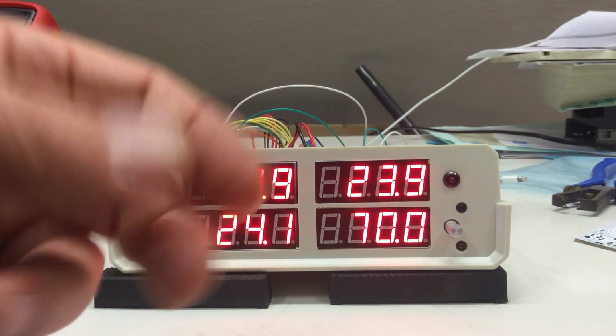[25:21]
And that was not the first time I had a problem with crimp connections. It was the first crimp connections, and I noticed I used the wrong crimp size for it. 1.4 instead of 1.6 for the wire itself, and 1.6 instead of 1.9 for the strain relief, but it looked. I had to bend it a little bit back and forth, but it looked good. But obviously, didn't work. Yeah, not the first time I messed up a crimp connection.
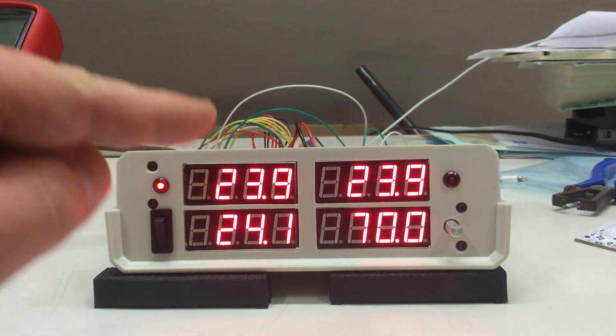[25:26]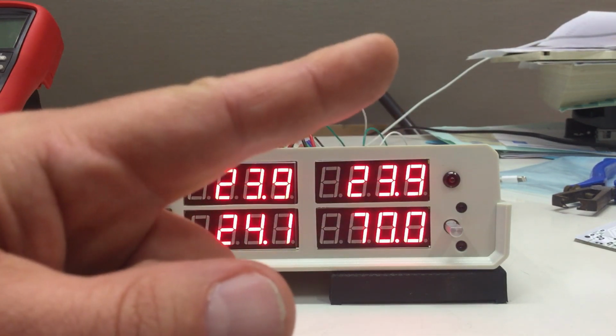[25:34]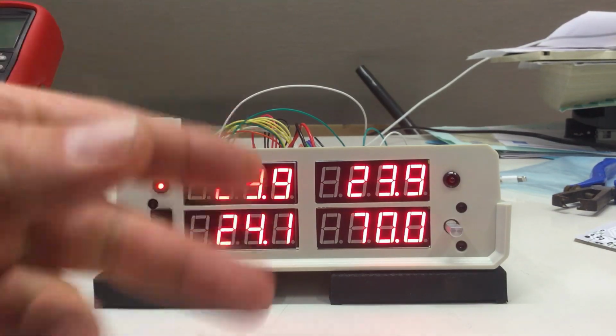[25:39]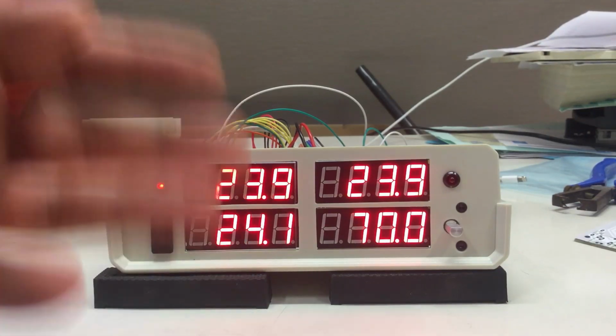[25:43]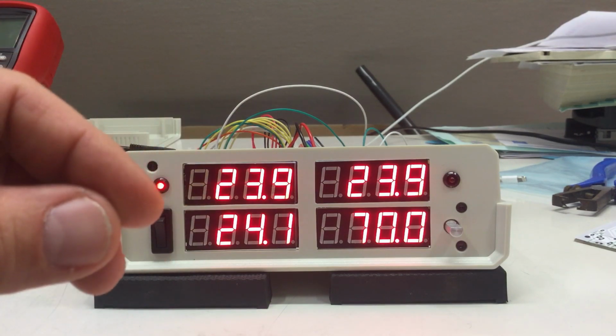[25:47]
So test your crimp connections before you use them. That was a while ago. As I said, probably no card, but a link below. It was on my UV exposure unit. There I fiddled around with a dead crimp connection or switched crimp connections for quite a while.
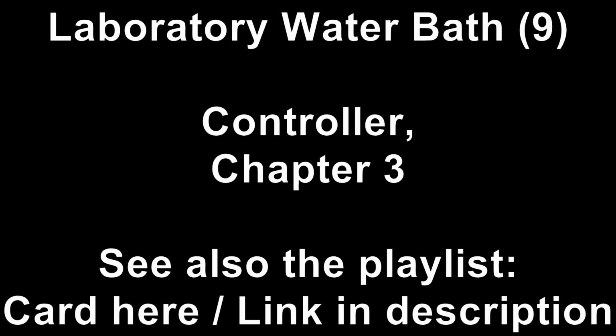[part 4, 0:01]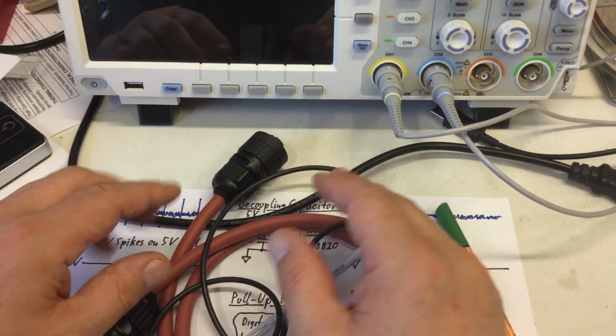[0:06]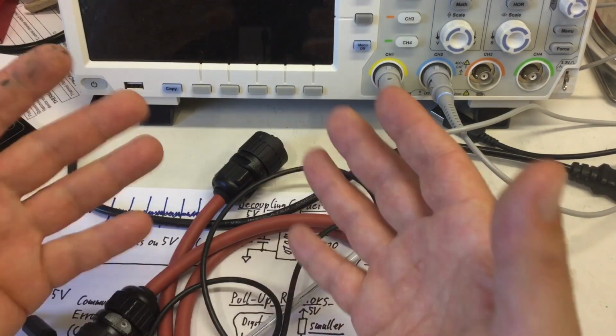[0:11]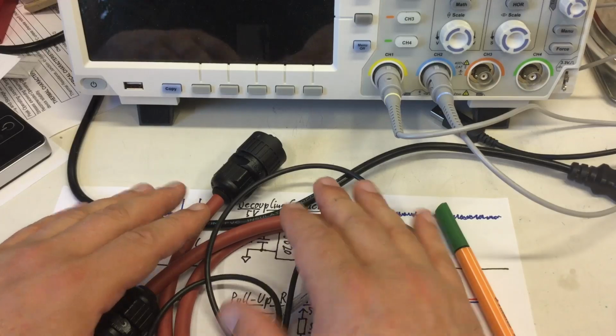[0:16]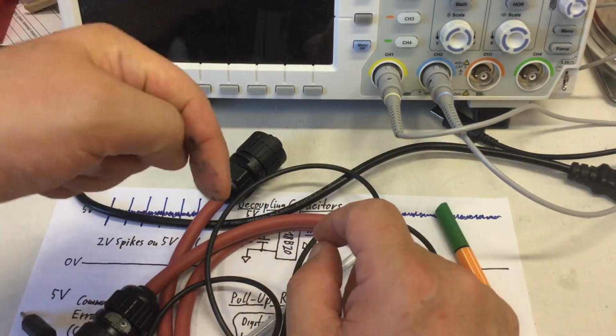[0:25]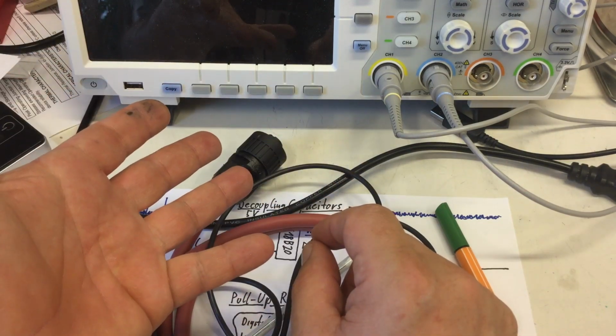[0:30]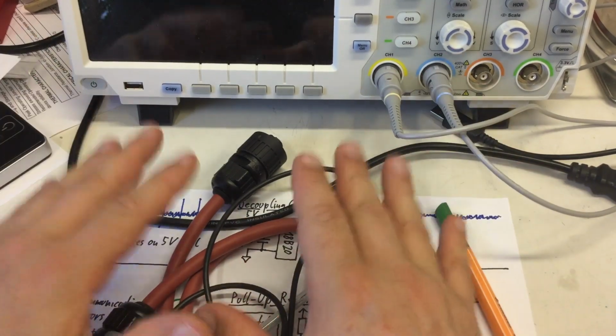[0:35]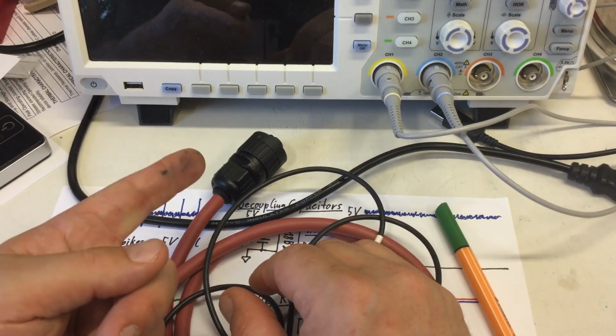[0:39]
I'm filming this preface after I finished shooting the video, and the video got quite long. So if you're just interested in the results, how to fix certain problems on your one-wire bus in conjunction with a DS18B20 temperature sensor or other one-wire devices, use the index in the description and jump to the wrap-up. There you find a summary. Anyway, it will take me the better part of half an hour to get to this point.
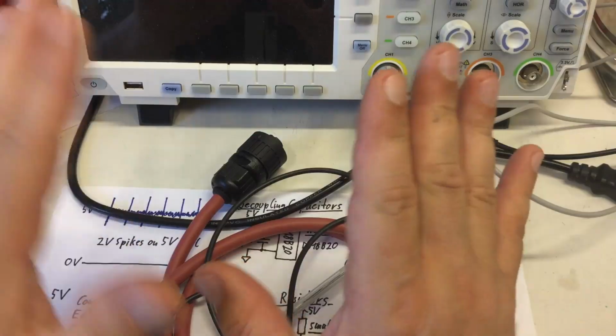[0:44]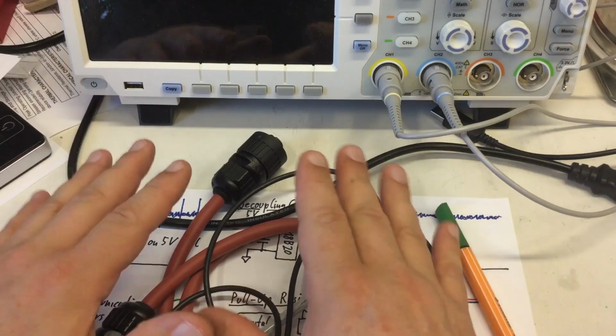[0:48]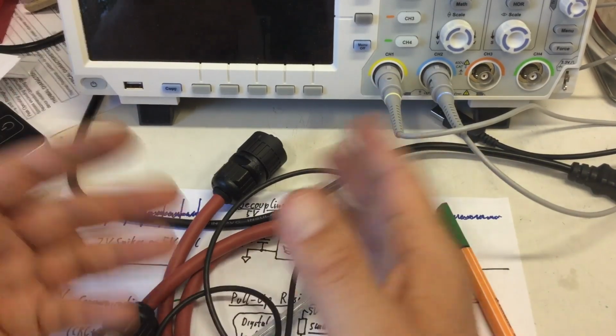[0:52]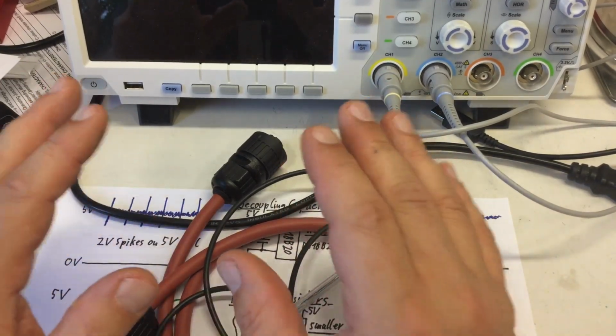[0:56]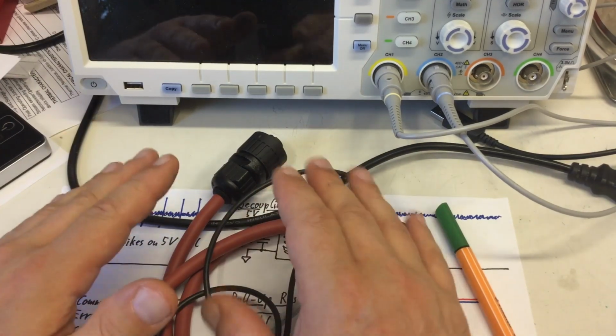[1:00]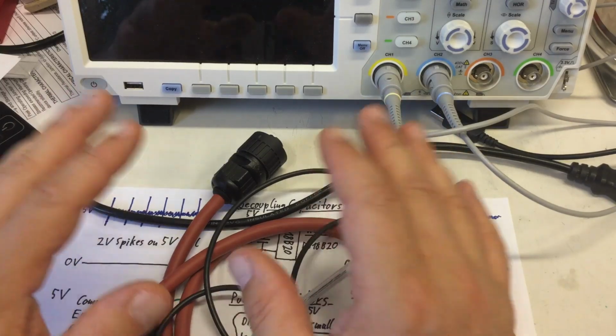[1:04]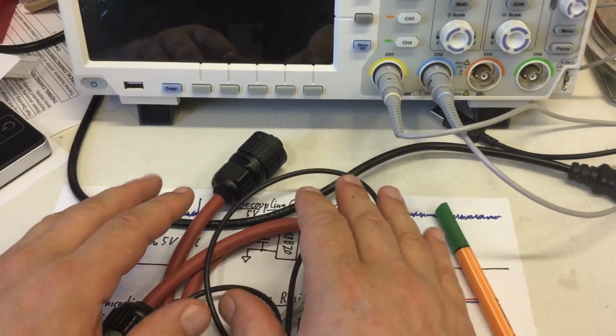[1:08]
I did it! I did it! No more glitches! And right before that, I was at a very bad place. Even after I managed to find a principled solution to my main problem, it took me another, not quite the better part of a half hour to perfect it so that my controller worked really perfectly.
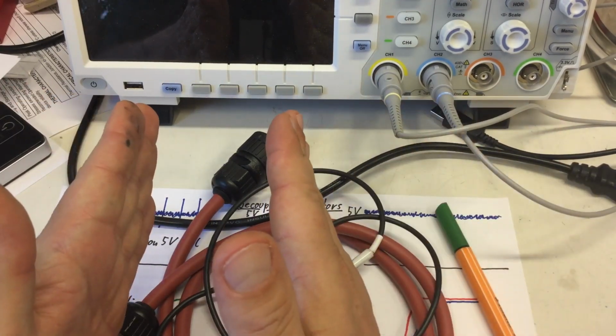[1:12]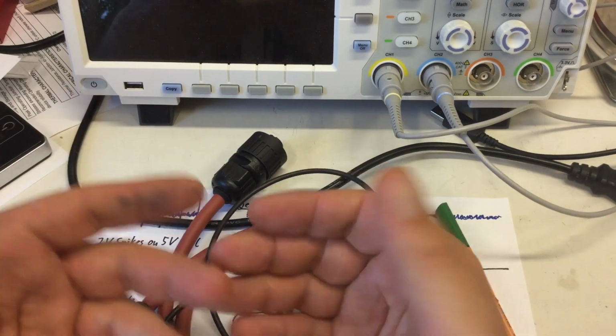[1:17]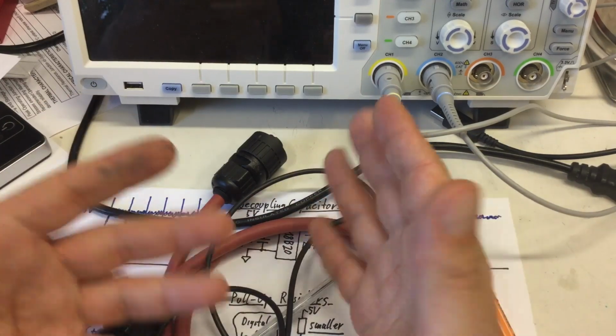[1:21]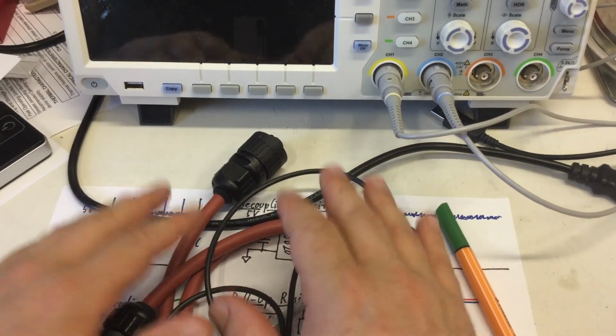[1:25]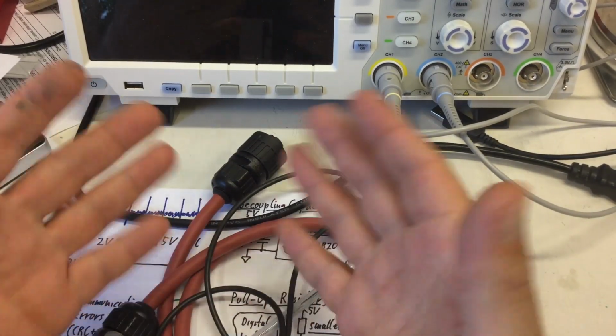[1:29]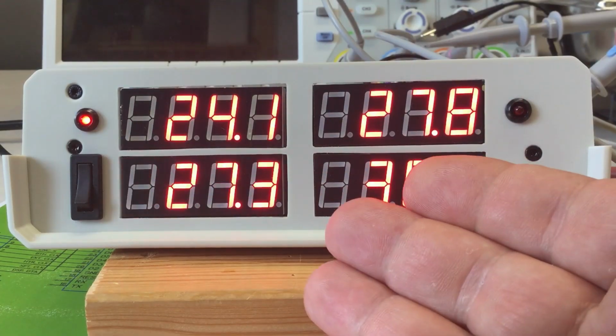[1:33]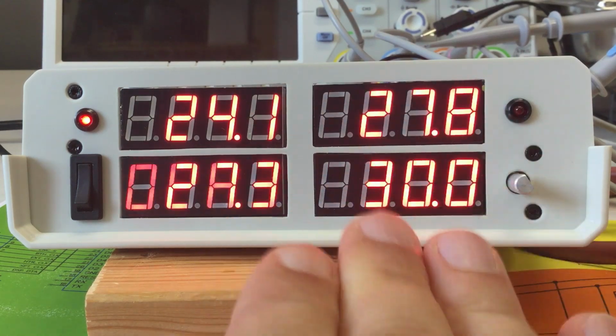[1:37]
I thought about cutting the video together, but I think you can learn a lot from my mistakes and learn a lot about chasing flukes that only appear now and then. So enjoy. That's where we left off last time, with the working hardware of the controller for the laboratory water
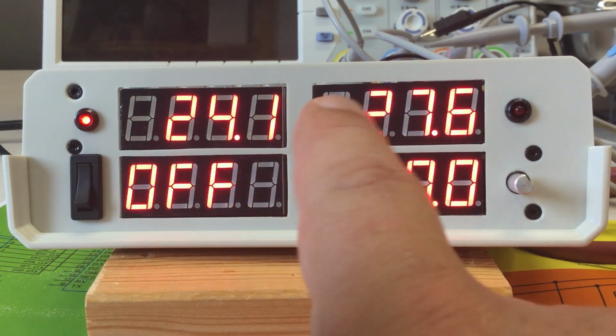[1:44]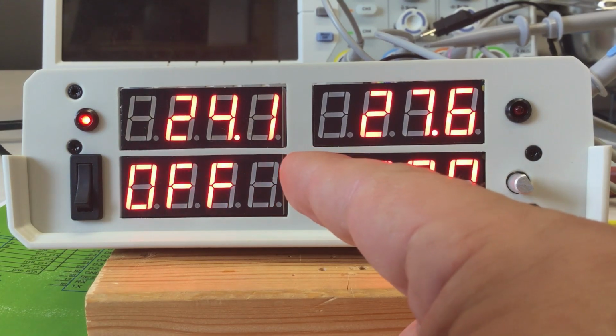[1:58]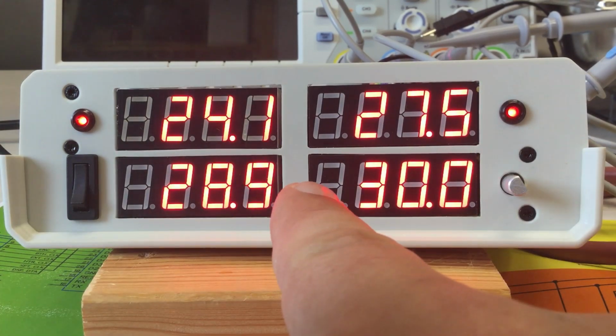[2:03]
bath. Well, almost working, because we observed now and then some glitches in the temperature readings of the sensors within the water bath. And of course, no glitches now. Yeah, typical. Ah, there, you saw it? Okay, so that's the problem with glitches. They are just glitches. And again. And we know several things about them.
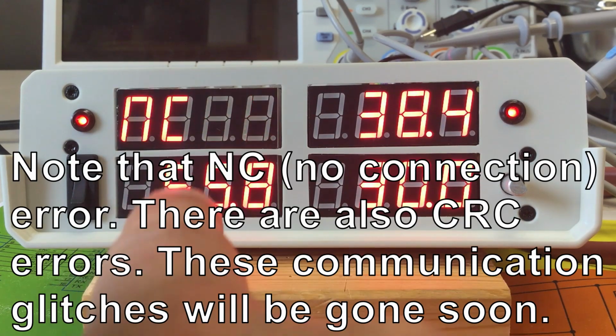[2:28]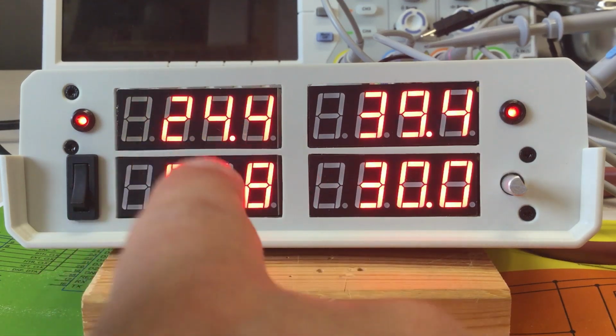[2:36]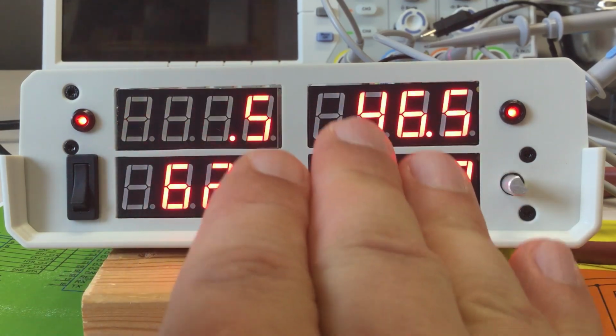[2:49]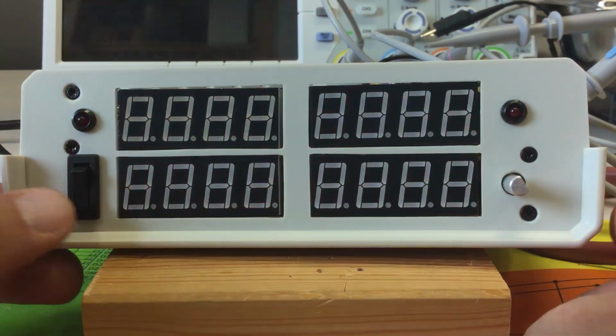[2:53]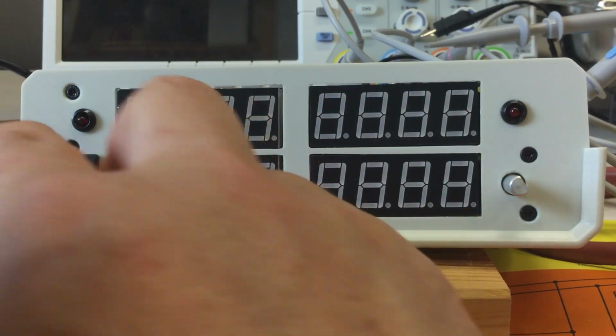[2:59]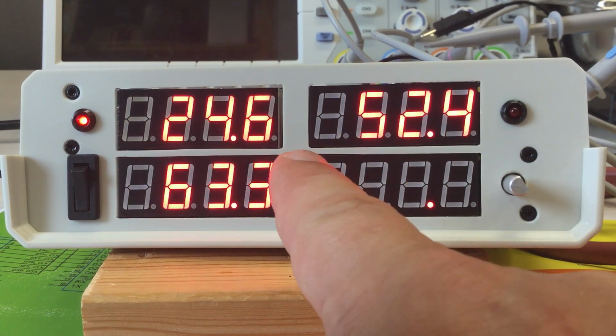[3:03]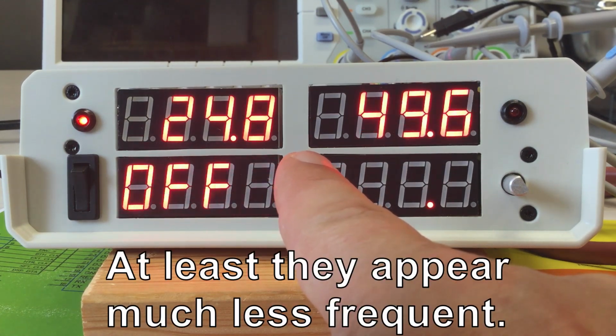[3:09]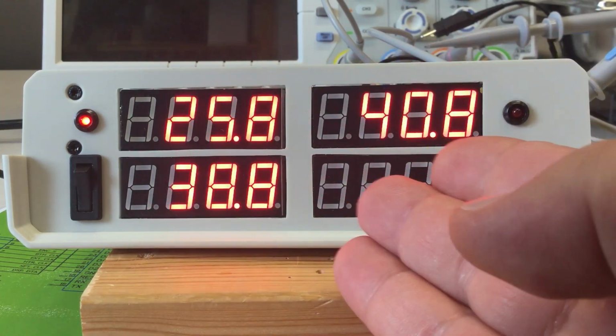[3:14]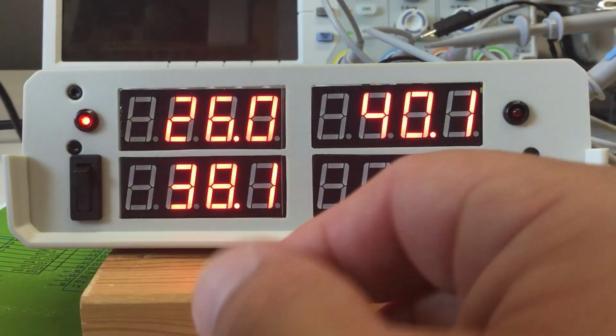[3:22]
First, as I said, they only happen with the sensors in the water bath, so the sensors that go through the digital isolator. The external sensor that is not isolated shows no such problems. And the other thing we know about these glitches is, let me switch off mains AC and power the whole thing through USB. The glitches do not appear when the whole thing is powered via USB. See, a whole minute went by, not a single glitch while powering the whole thing from a USB power bank.
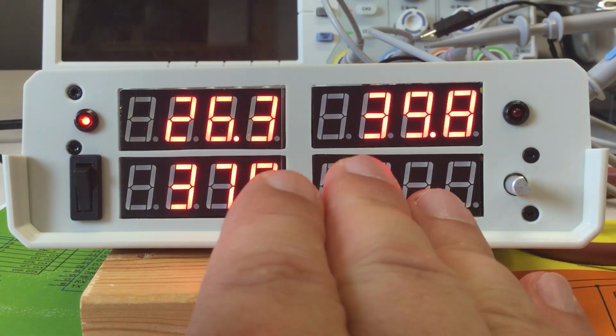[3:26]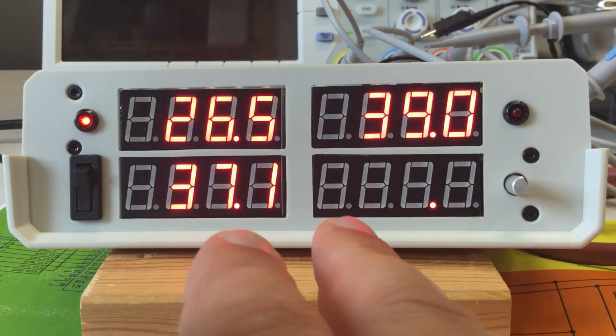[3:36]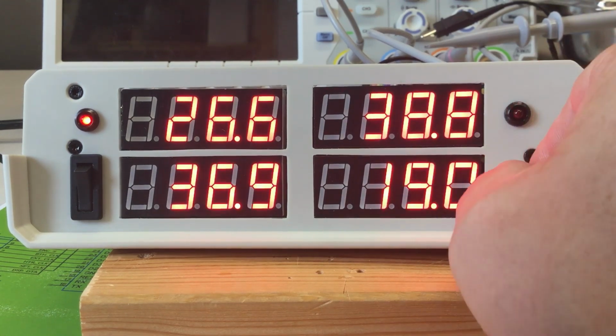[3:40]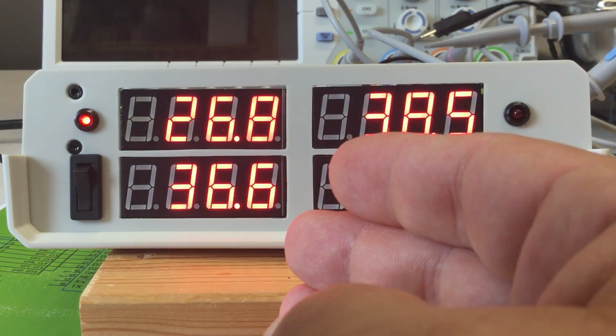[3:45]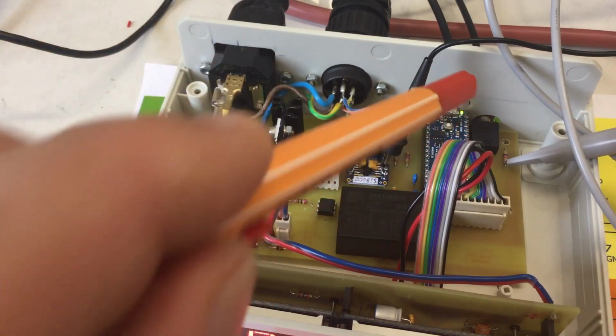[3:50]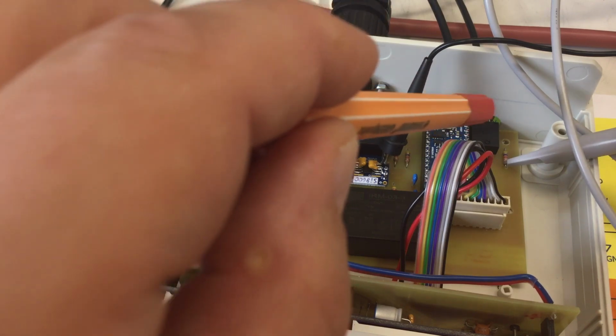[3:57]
So, let's take a step back and analyze what's going on here, because I really don't like to handle these glitches in software. I also don't like to debounce my rotary encoder in software, and these glitches would be much harder to handle. Let's have first a look at the one-wire signal of the working temperature sensor, the external one that is connected via the 3.5mm jack here.
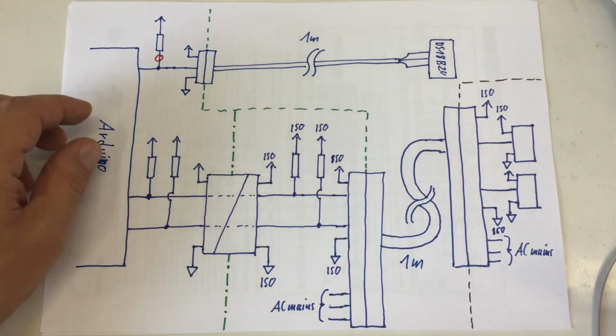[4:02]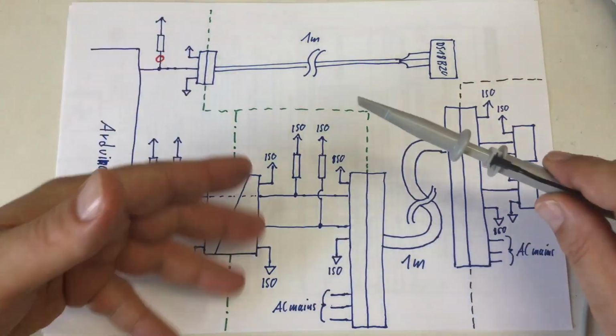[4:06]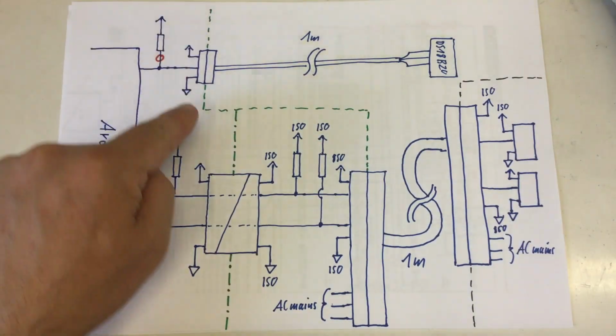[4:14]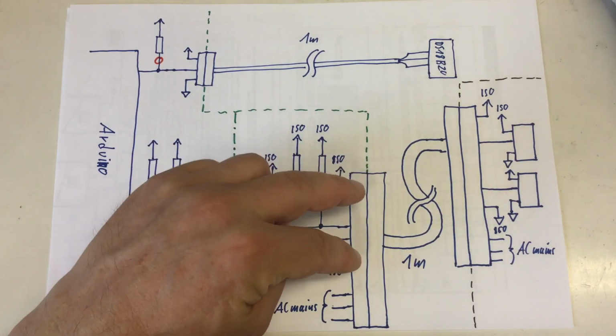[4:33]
While I was cutting the video, I noticed that it's not always perfectly clear where I connect my oscilloscope probes. So I created these little inserts afterwards to show you exactly that. To the left, behind that green line, is my controller with the Arduino, and the Arduino has two outgoing one-wire buses, each with a pull-up resistor, and they go through a digital isolator, and then they have two more pull-up resistors for the isolated side and go into a big connector.
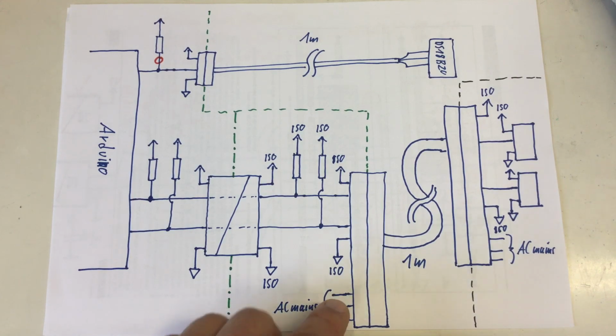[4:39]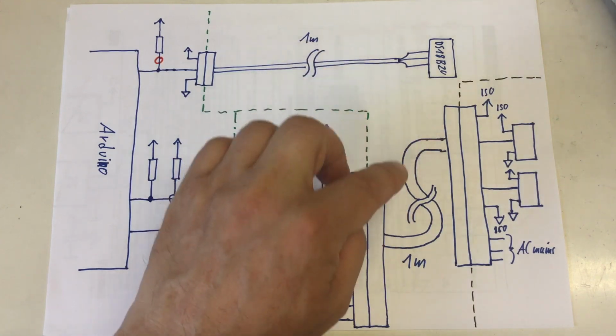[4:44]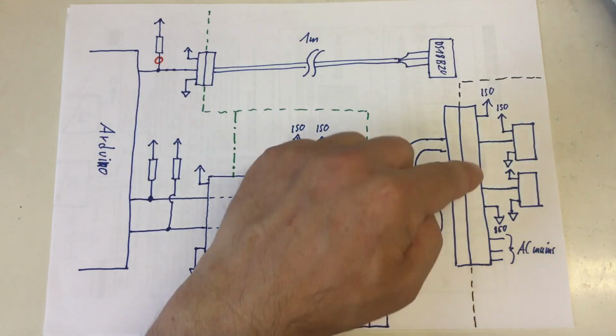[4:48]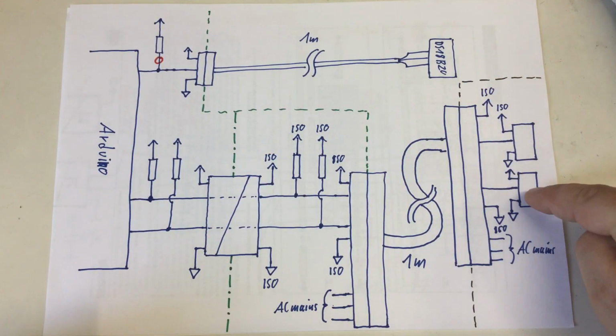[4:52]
The big connector also carries the AC mains for the heater of the water bath. And this goes all through a thick AC power cable to my water bath. Here to the right, behind the black line, two DS18B20 temperature sensors are connected. And AC mains obviously goes, and ground, to the heating element and the metal parts.
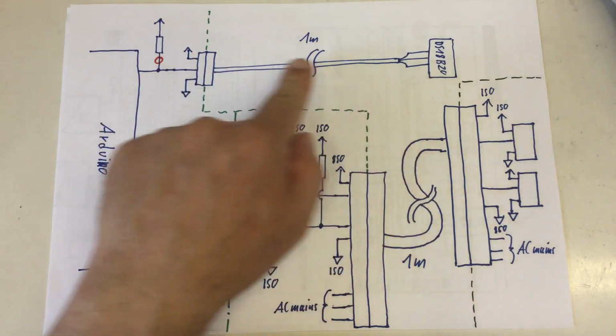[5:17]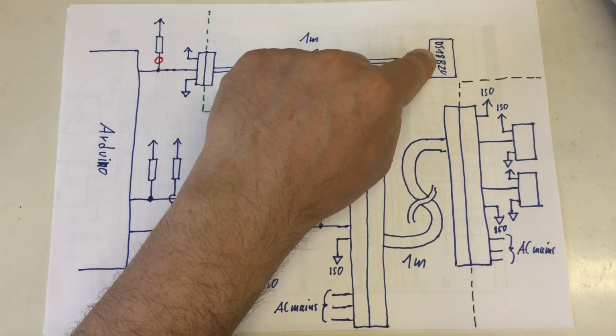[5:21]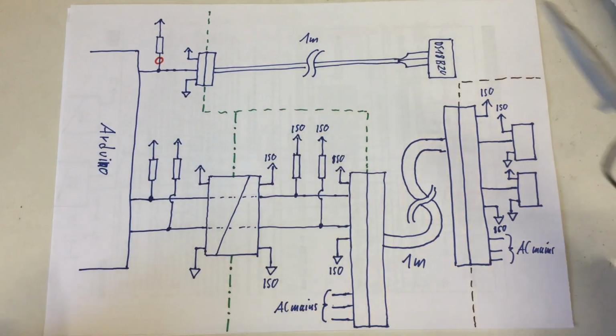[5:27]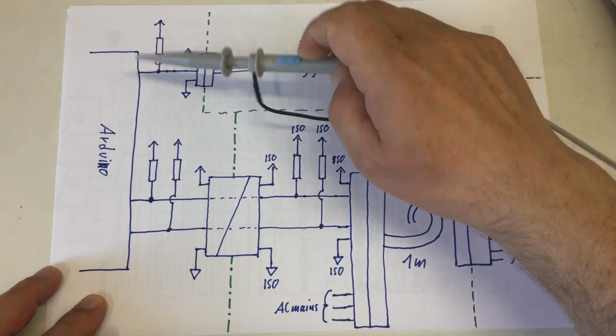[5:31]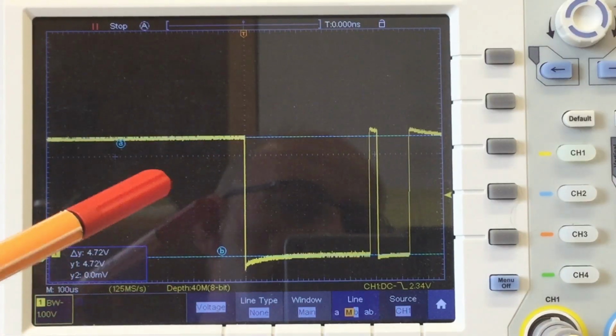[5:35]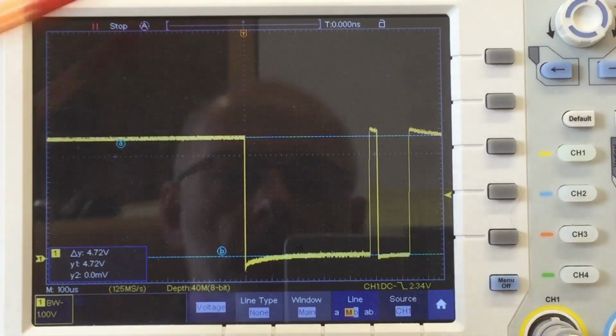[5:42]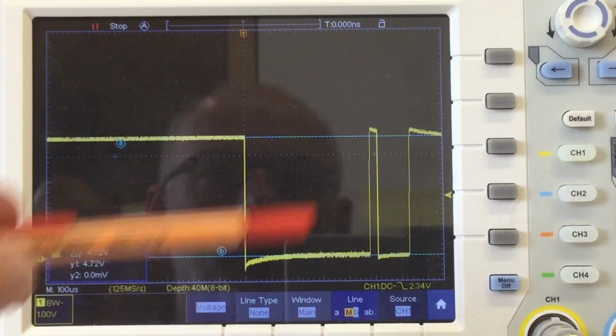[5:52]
The Arduino also supports a third one-wire bus, with its own pull-up resistor, and that is directly connected via a 3.5mm jack and 1 meter of signal cable directly to a DS18B20. That DS18B20 is working perfectly fine, and I'm probing right here at the pull-up resistor with my oscilloscope probe. So I did a single shot here of the signal, and I also used a cursor so we have a reference when you look at the other signals. High level is about 4.7 volts, low level is 0 volts.
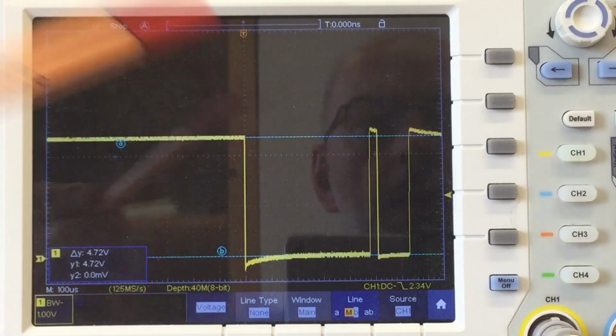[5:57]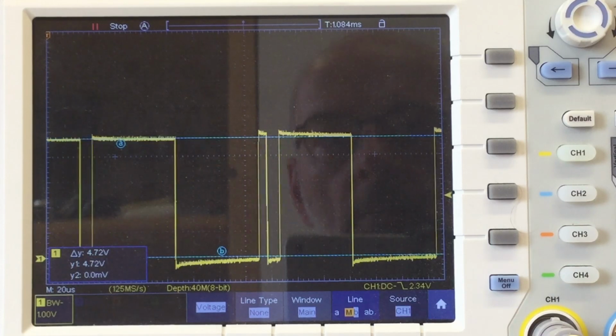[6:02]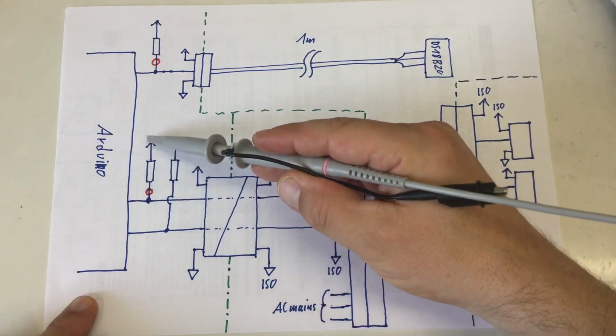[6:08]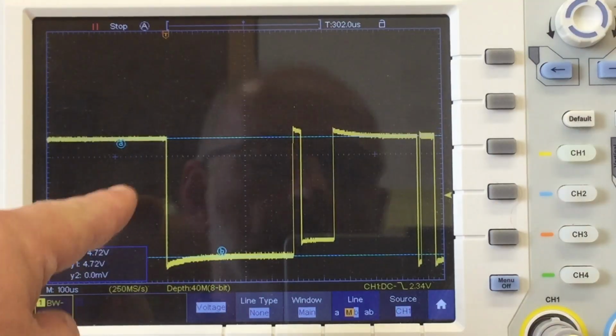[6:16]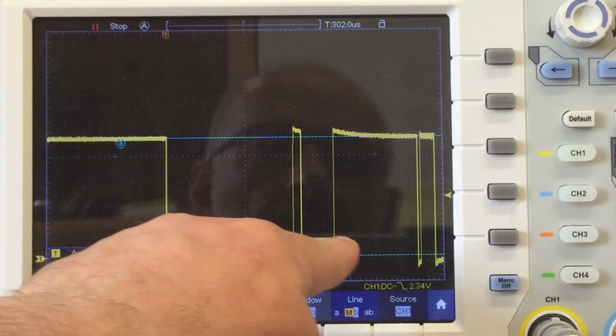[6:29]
And if you look at the waveforms, and I can scroll through that signal, they look squarish enough for my taste. I'm probing now here at that pull-up resistor at one of the affected one-wire channels directly after the Arduino. Now, that's the signal going from the Arduino to the digital isolator, or between the Arduino and the digital isolator. The voltage levels are the same. You see here we are not going quite down to 0 volts.
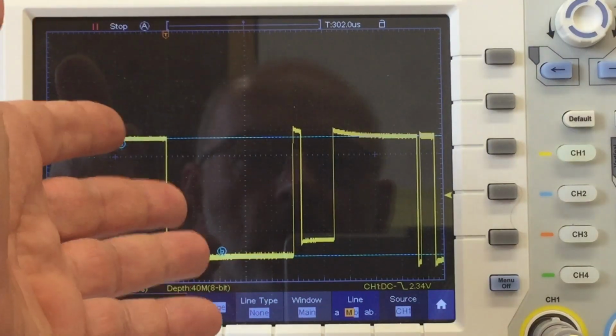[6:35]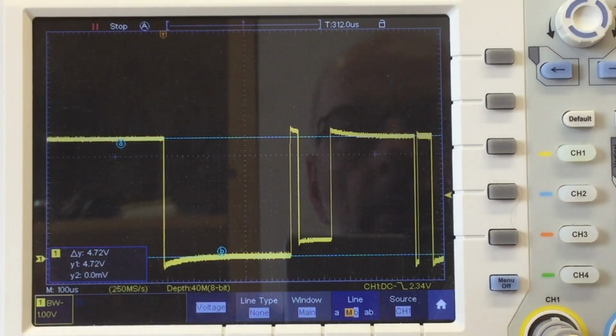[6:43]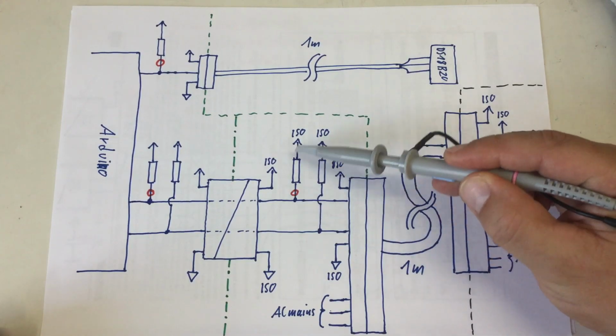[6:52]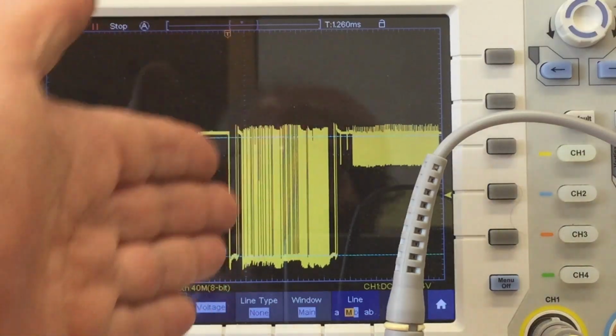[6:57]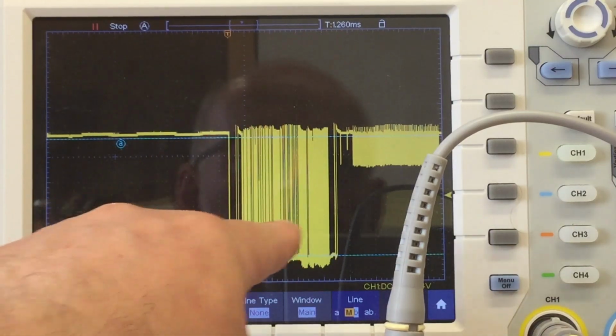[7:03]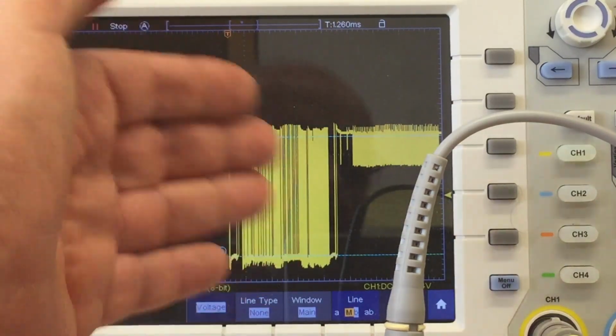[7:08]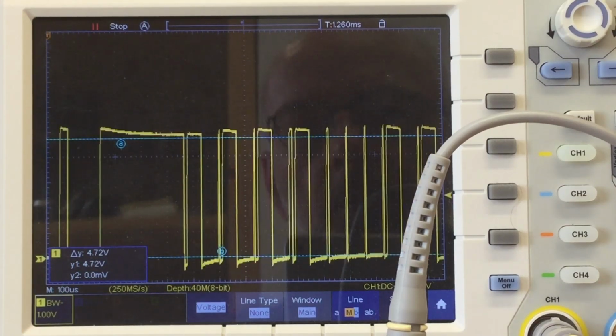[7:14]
Why that is with the digital isolator, I explained in a video, card link. And the rest of the signal looks just peachy. My probe is now connected here at the pull-up resistor behind the digital isolator. Now we're looking behind the digital isolator. So the first thing we notice is that noisy stuff here. But let's first zoom in into the signal.
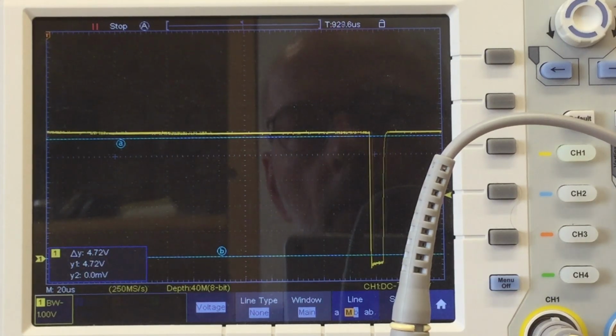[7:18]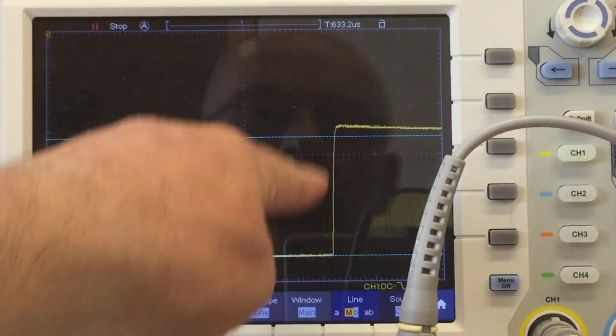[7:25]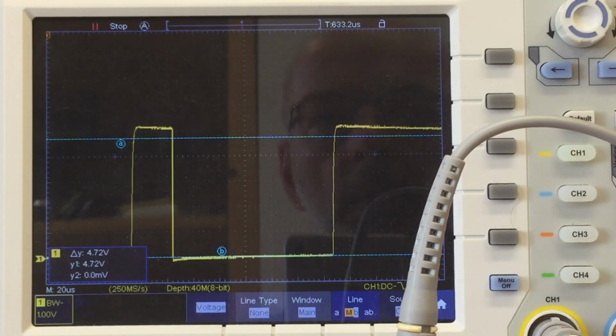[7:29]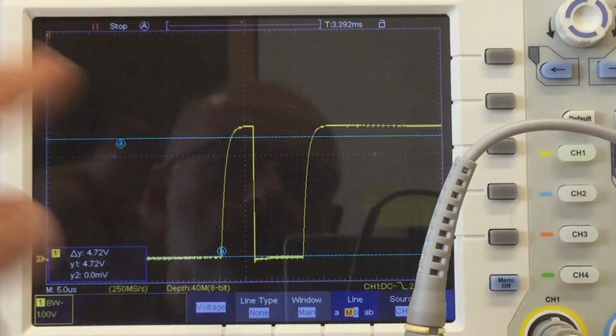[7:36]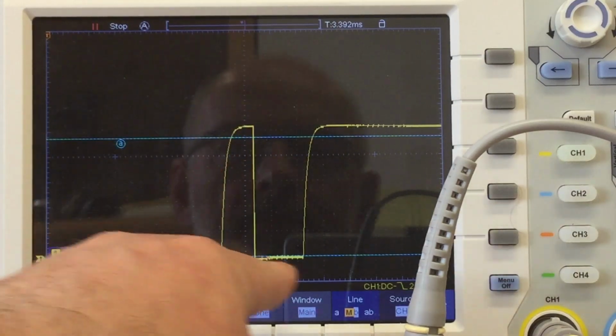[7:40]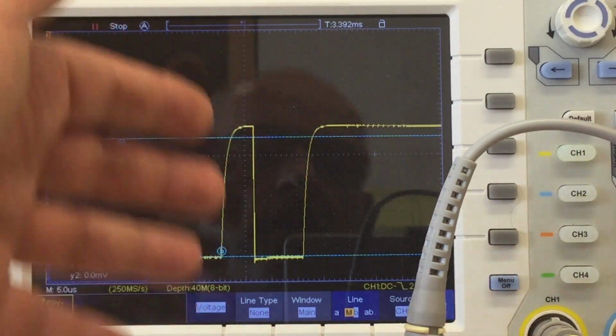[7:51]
Yeah, the signal looks good enough. The rising edges are not as sharp, but it's within what you can tolerate. But if you zoom in here later on, you see these rising edges, they really look bad. And that's the first indication of what might go on here, and that is that our pull-up resistors on the one-wire bus are maybe a little bit too small. But that's only one point.
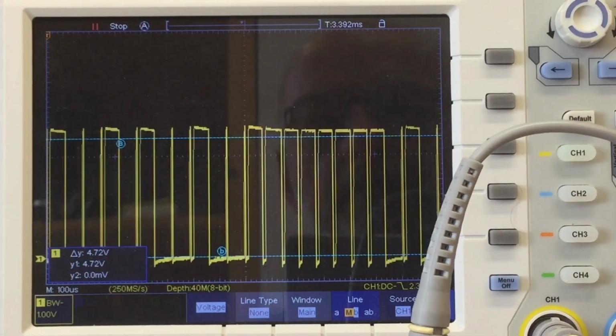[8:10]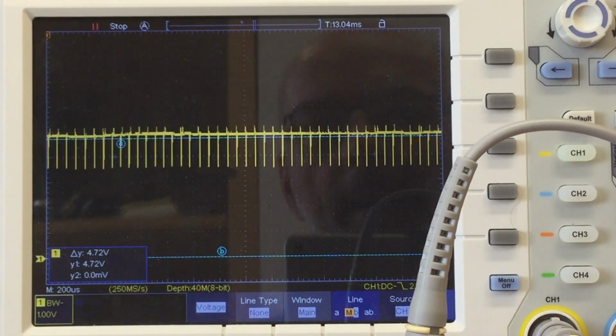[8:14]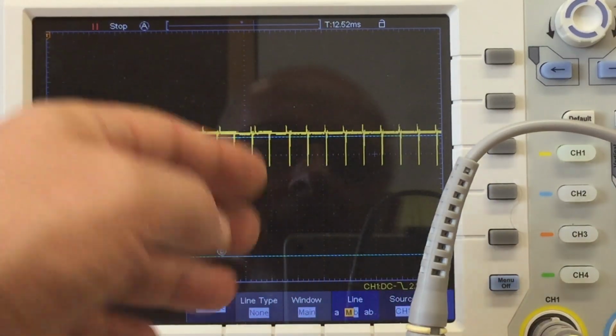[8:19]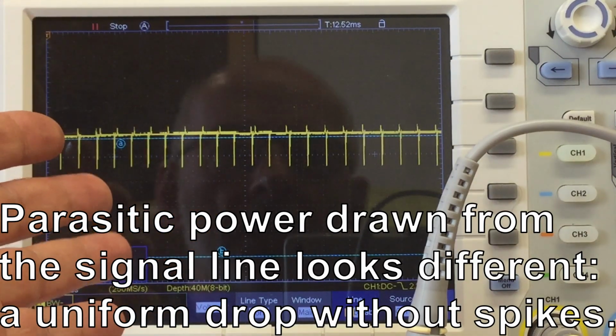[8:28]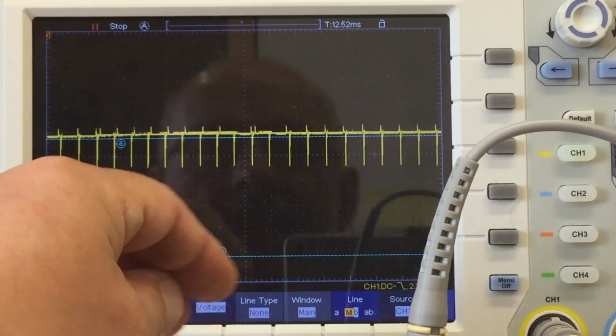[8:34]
The other point was that we have this noisy stuff here. And that's something I would expect if the sensors were running on parasitic power, which they shouldn't. So yeah, maybe we have two problems here. One with the wiring and a second one with the pull-up resistors.
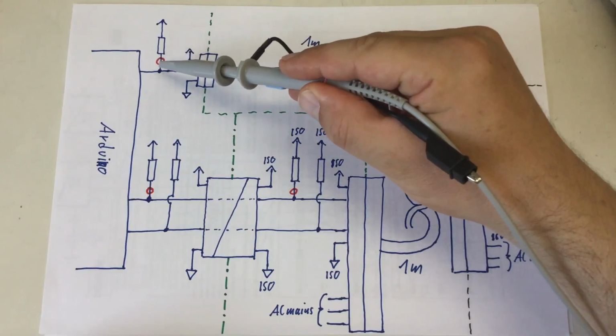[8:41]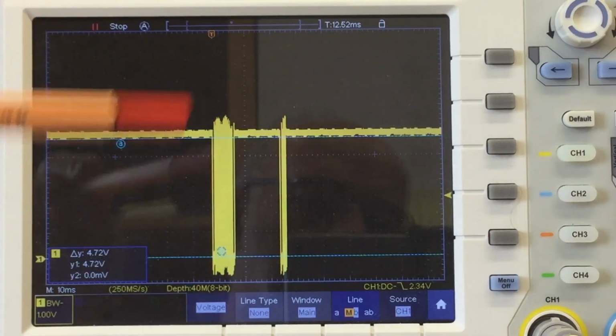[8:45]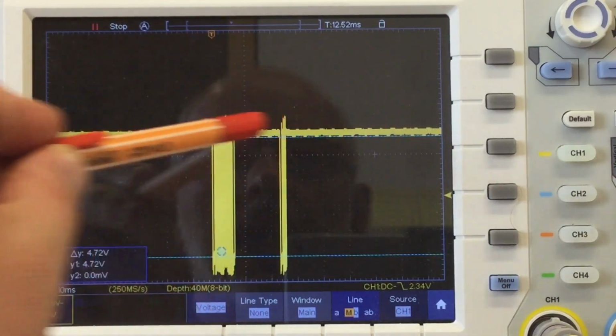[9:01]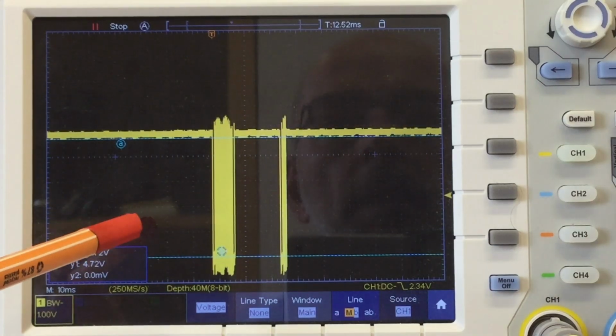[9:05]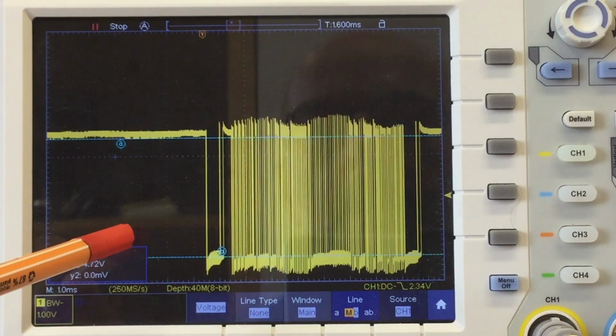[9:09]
I'm measuring again at that pull-up resistor here. But so far everything was working from the USB power supply. Now I switched over to mains AC power. And we see here the signal again from the good sensor, without digital isolation. We have a little bit different voltage levels. Let me zoom in here just a wee bit.
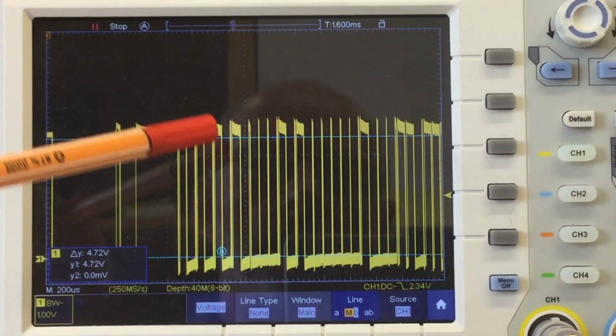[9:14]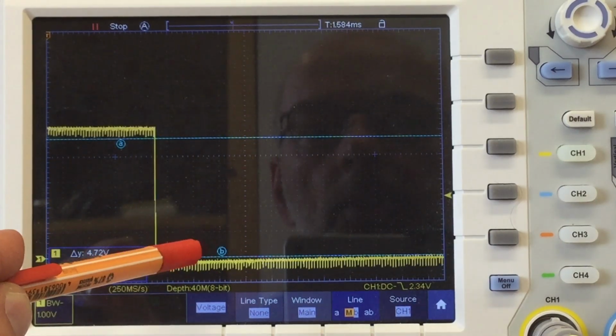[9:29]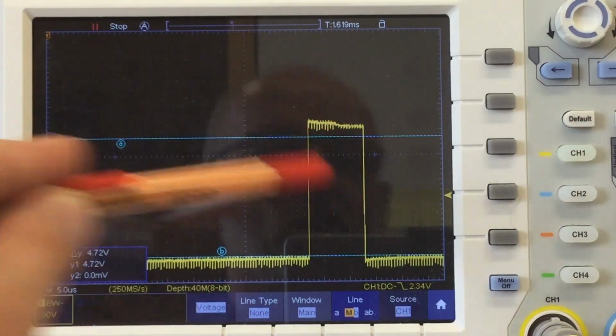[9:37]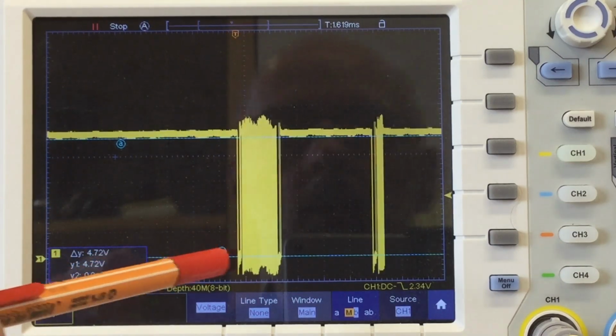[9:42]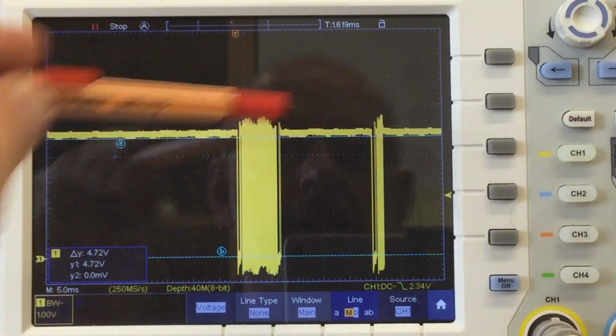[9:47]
And a little bit more noise, because now we're not running from lithium ion, but from a switching power supply under quite a load. But otherwise, a little bit different voltage levels. The signal itself, the edges, there you can see the switching noise. It's really annoying. But they are as sharp as ever. And in addition, on the good sensor, we also don't have that noisy stuff here, these real hard spikes.
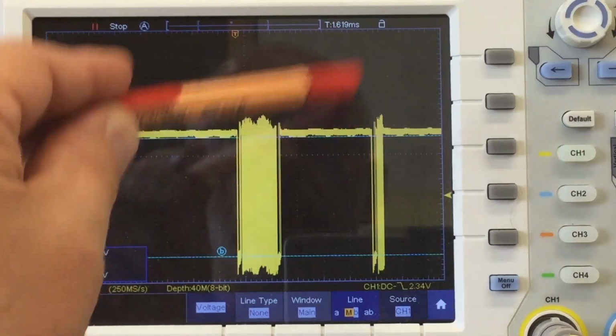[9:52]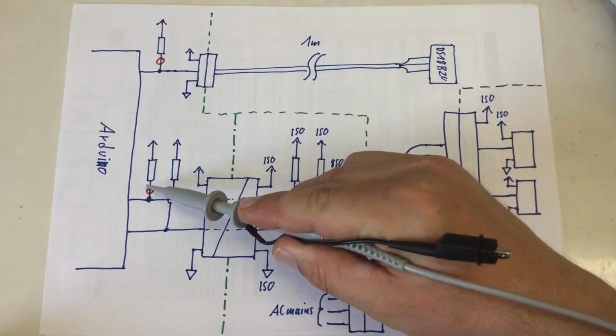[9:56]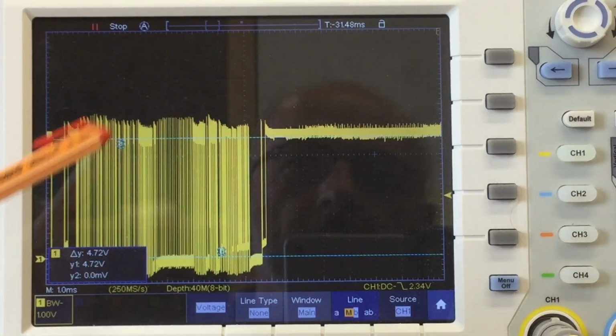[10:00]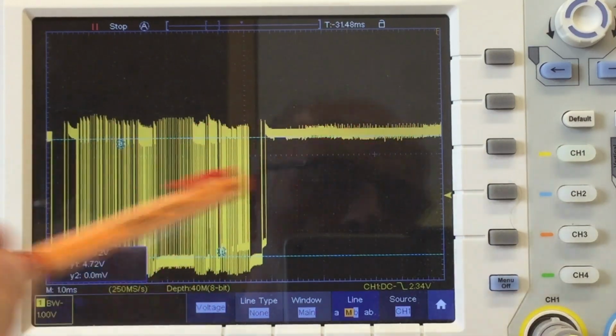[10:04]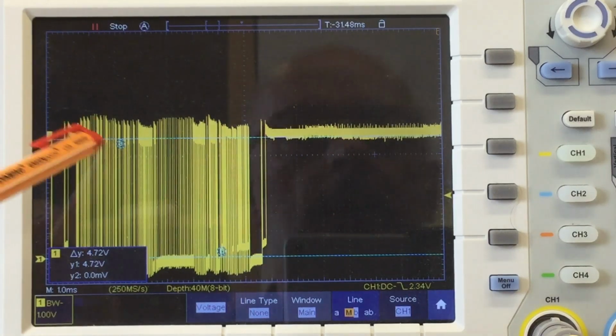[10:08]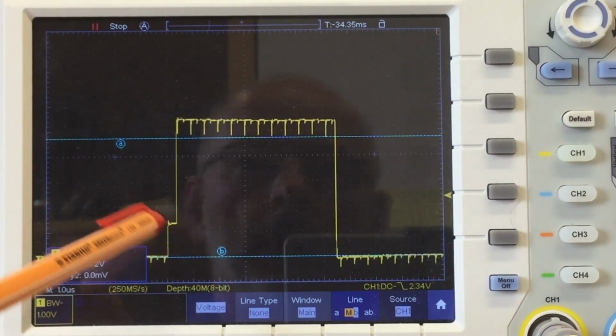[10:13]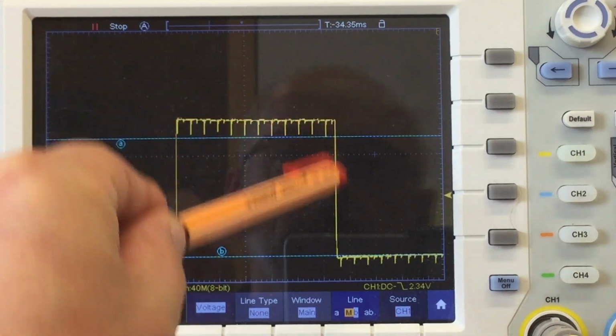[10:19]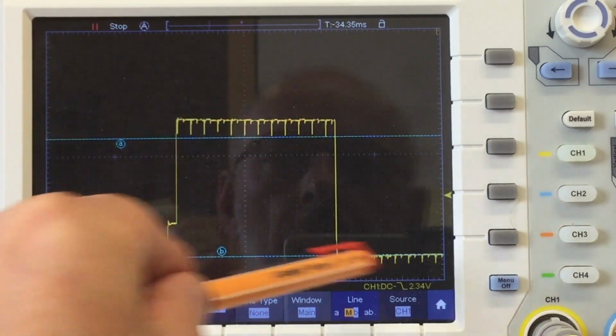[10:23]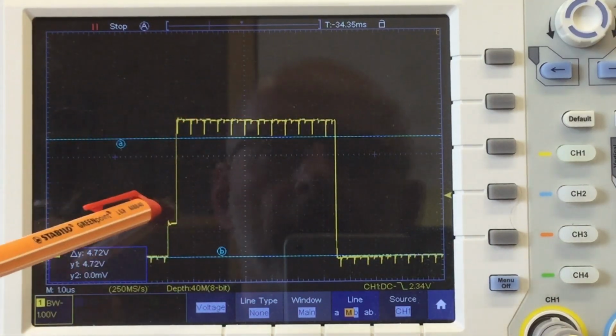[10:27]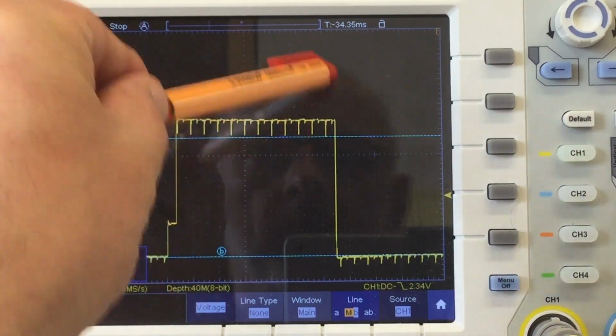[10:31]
Okay, let's probe the output from the Arduino to the digital isolator. So we are probing at that pull-up resistor again. At that scale you see a little of that noise here right after our data package, but the data package itself, this here is an artifact from the digital isolator. Looks good. I mean, we have the switch mode power supply noise here, which is not that nice, but it is what it is.
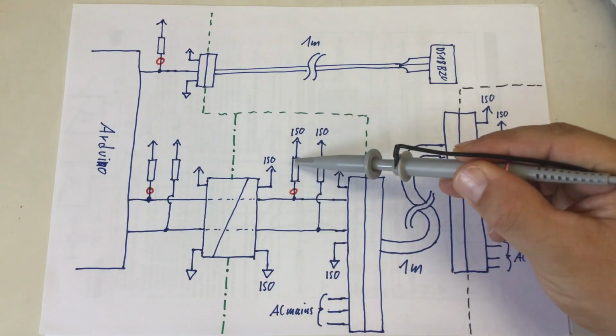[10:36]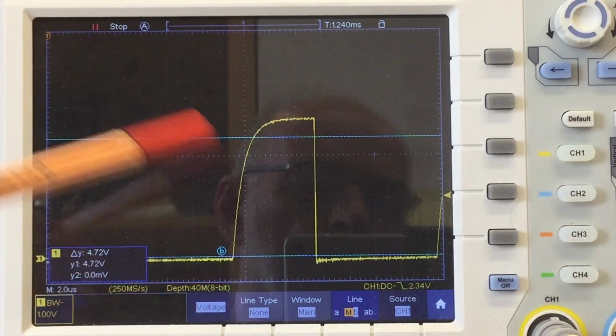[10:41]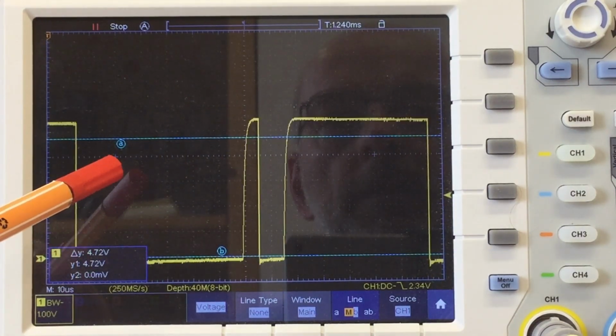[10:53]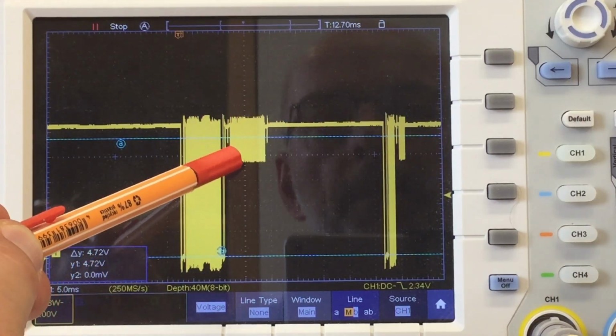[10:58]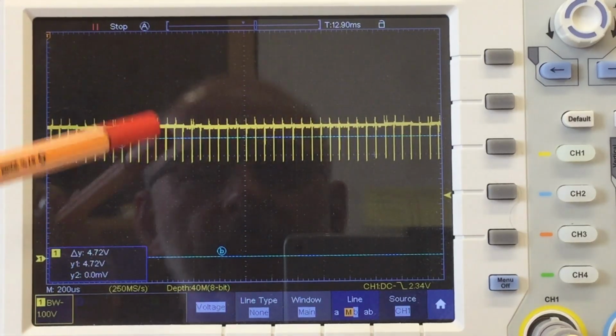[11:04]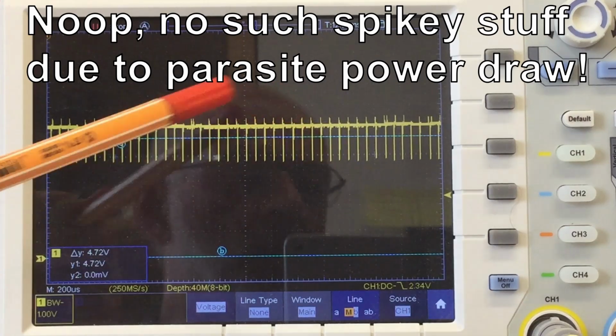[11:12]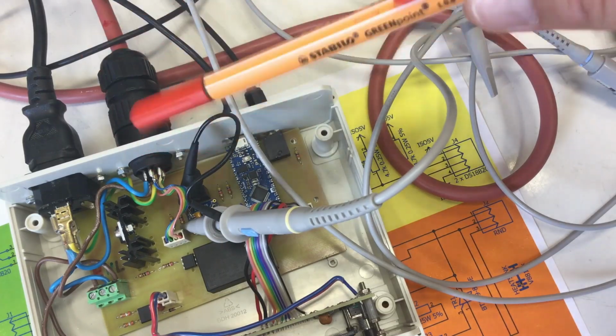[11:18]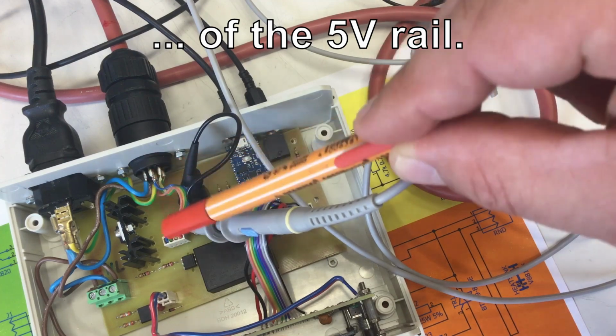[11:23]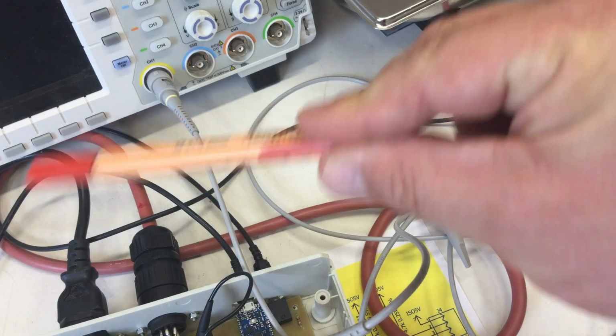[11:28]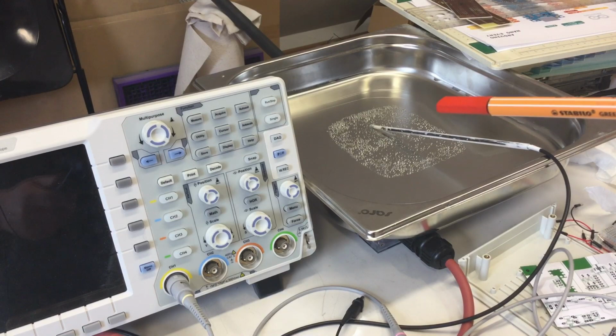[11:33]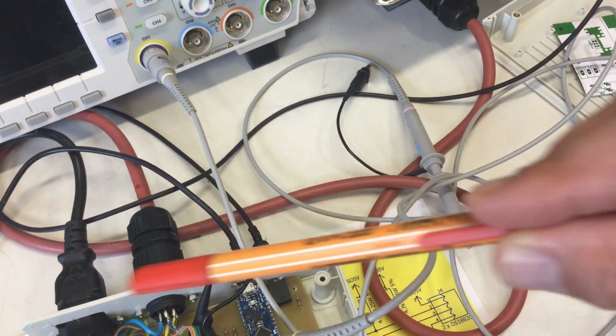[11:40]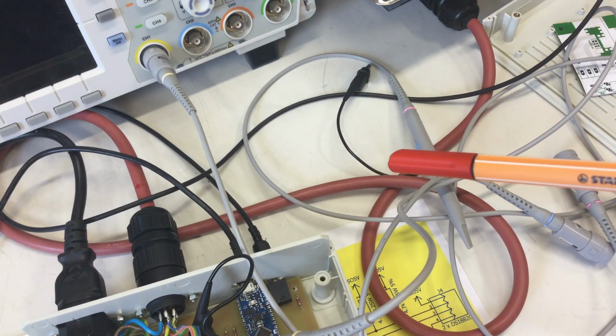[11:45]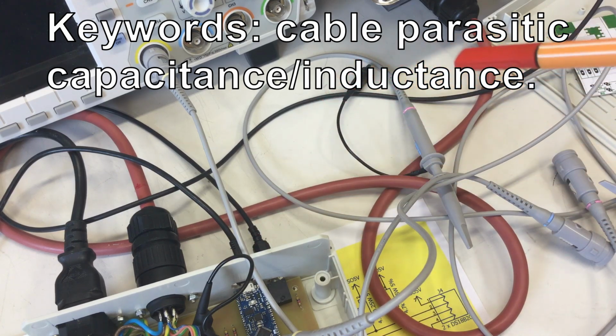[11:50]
So, first order of today would be to check the connections from the board through the long, thick cable to the sensors in the water bath. And probably the long, big cable is the reason why my standard 4.7K pull-up resistors are too small and we have these really smooth, slow rising edges in the signal.
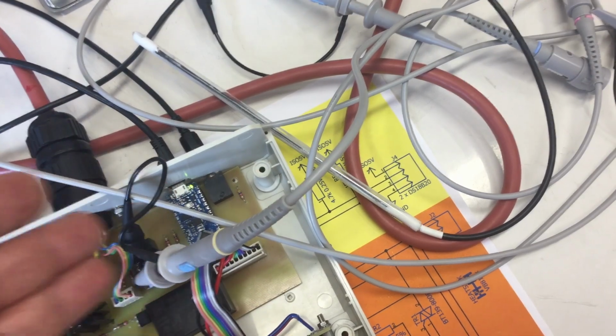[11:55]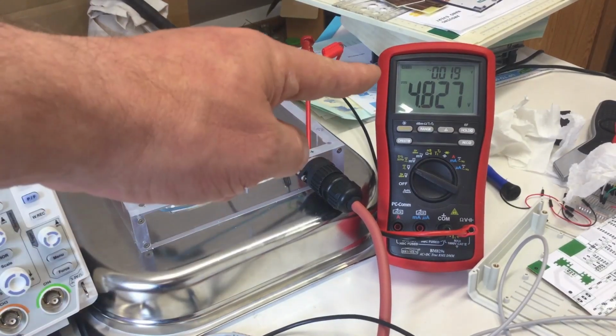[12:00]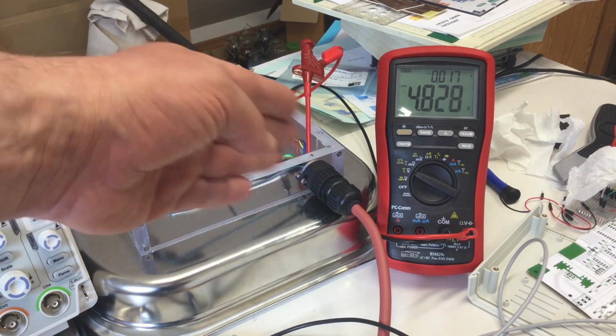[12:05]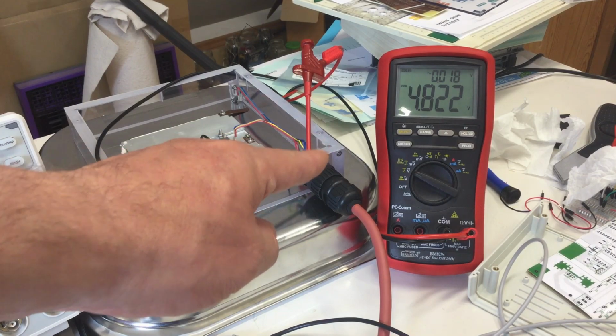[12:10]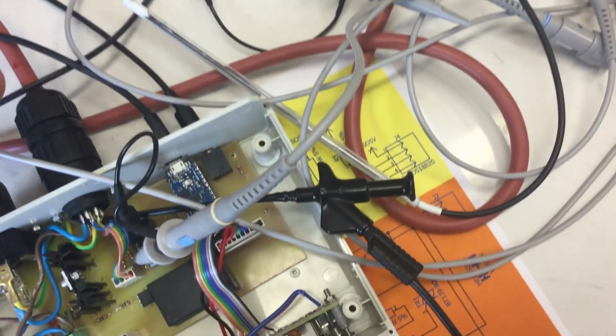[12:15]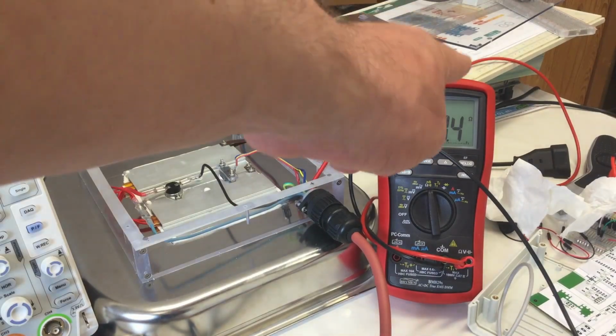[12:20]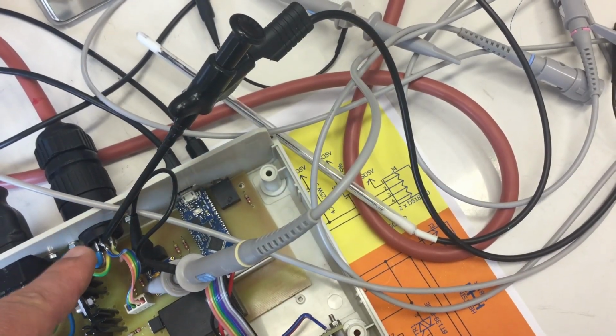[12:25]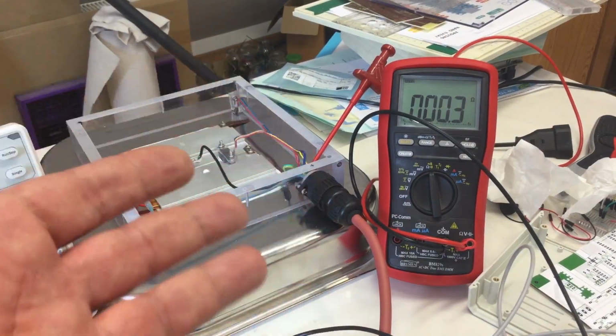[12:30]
Nope, at first glance it looks like I got 5 volts coming out here between my 1-wire ground and 1-wire 5-volt line. Let's check the resistance. 0.2 ohms, so basically nothing for the 5-volt line. And 0.4 ohms for the ground connection. So, well, 0.3. So that seems to be okay.
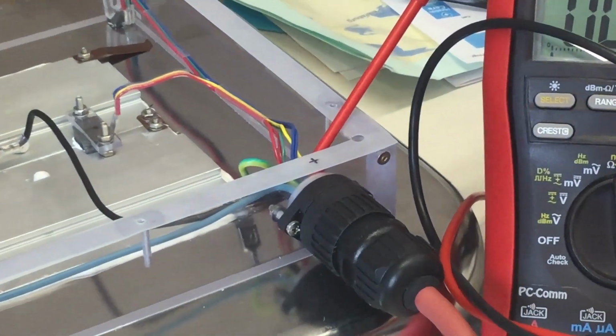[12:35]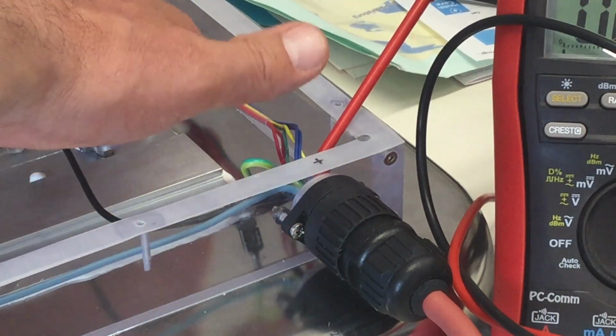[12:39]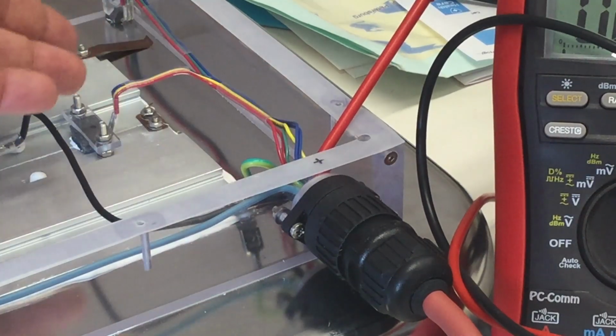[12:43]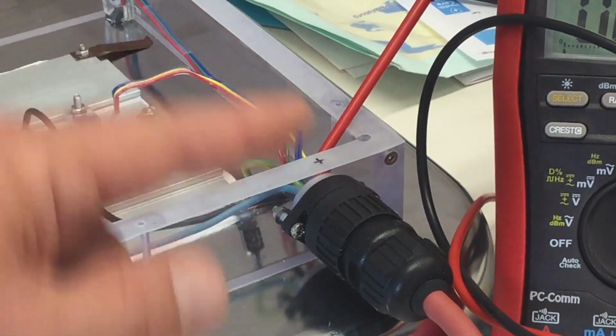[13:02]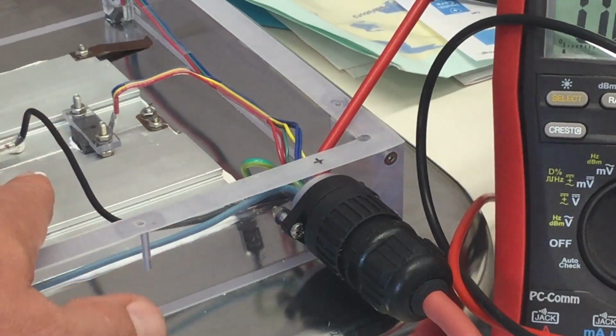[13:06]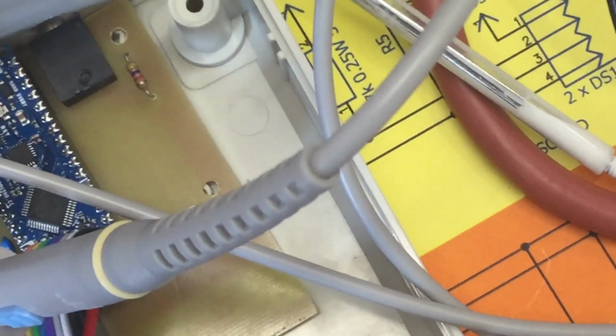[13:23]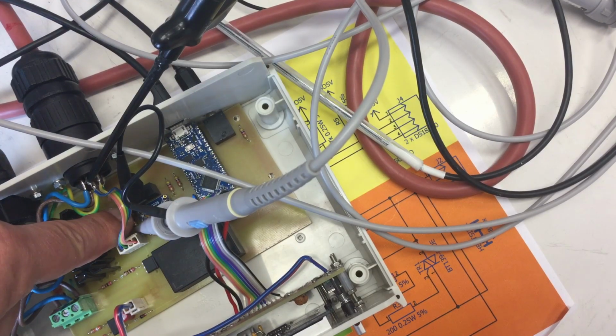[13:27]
The only thing I can think of is that somehow a wire is broken here. But I mean, these are hookup wires. They might break. But the 5-volt connection broken to both sensors? I don't think so. Or both sensors may be damaged from the very first test. Yeah, that failed. It got quite warm in here, but no, I don't think so. Especially the sensor back here, which gives us more frequent bad readings. No, can't be. So let's get back to our two pull-up resistors down here and make them smaller.
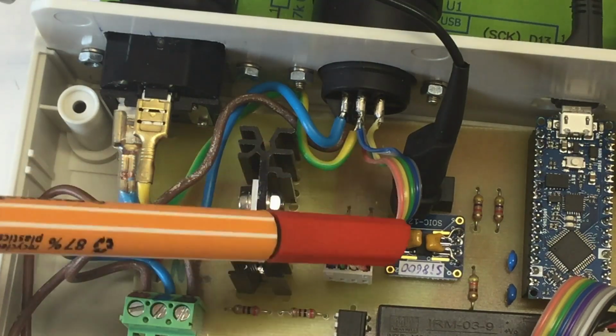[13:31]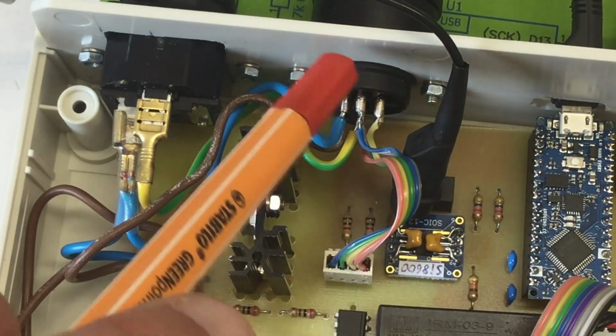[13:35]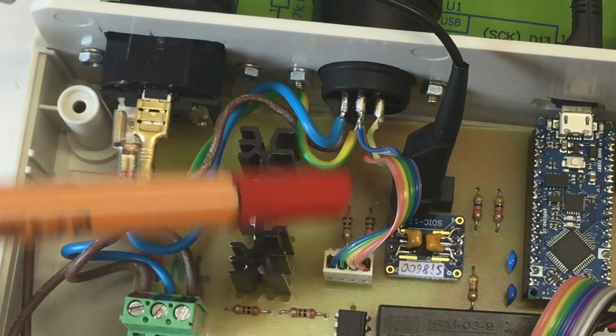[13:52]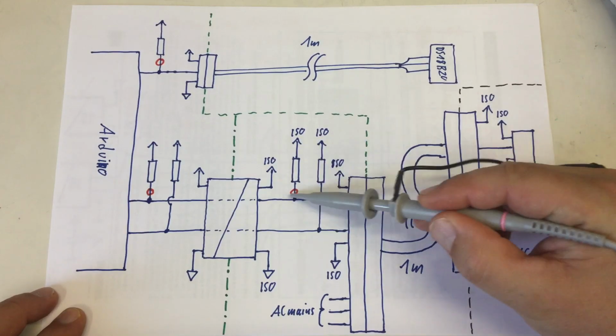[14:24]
So if it's not the 5-volt connection or the ground connection to my DS18B20 sensors in the water bath, it must be the pull-up resistors. And I replaced those now, they were 4.7K, with 1.5K. Within tolerances, expecting a maximum supply voltage of 5.5 volts, plus minus 5%. The resistors, that's as small as I can go with the DS18B20s, because they only have a guaranteed minimum sink current of 4 milliamps. If you try to sink more through them, they won't be able to pull down the signal line really to 0.
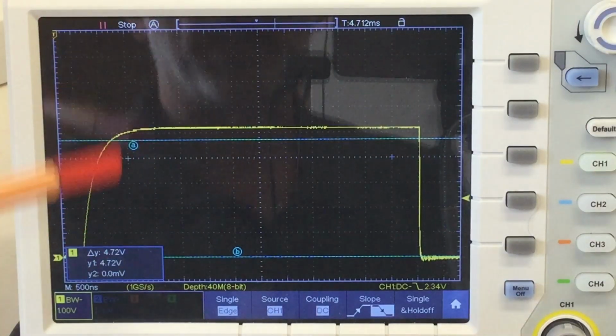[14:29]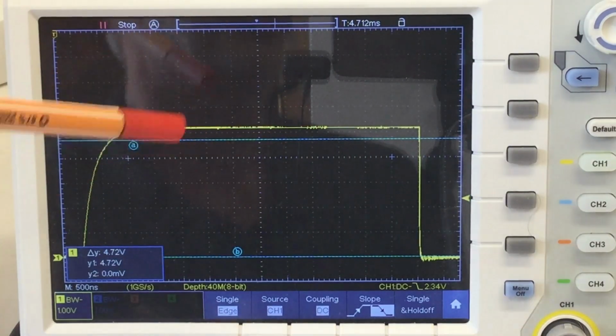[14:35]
Measuring again here at that pull-up resistor. And if we have a look at the scope, measuring the isolated side of the one-wire bus, the power supply is from a USB bank.
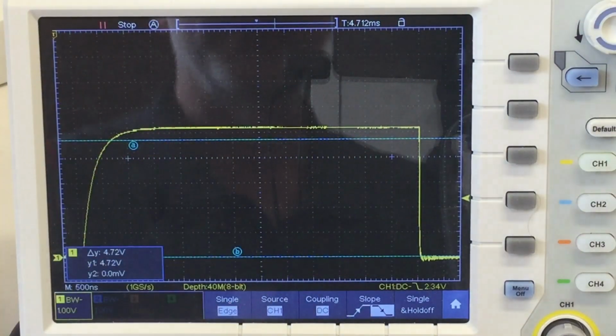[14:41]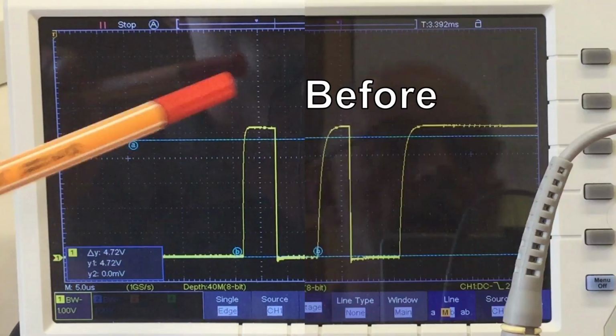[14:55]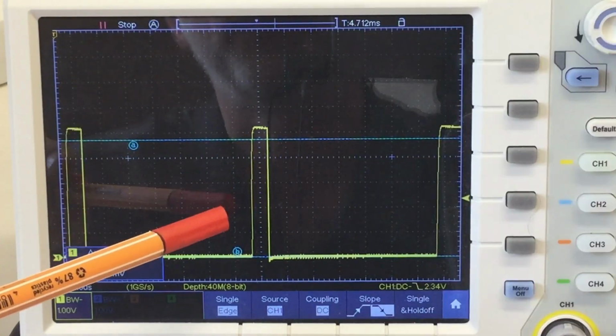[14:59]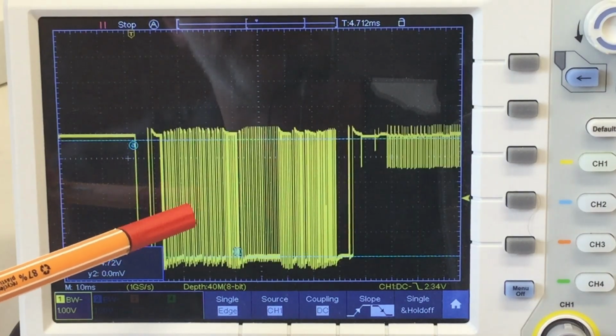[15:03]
Yeah, that's one of the very short pulses, and it's a difference like day and night. I mean, you still have here a not very sharp rising edge, but if you put that into perspective, that's completely okay. And as I said, that is one of the very short pulses. So no problem there.
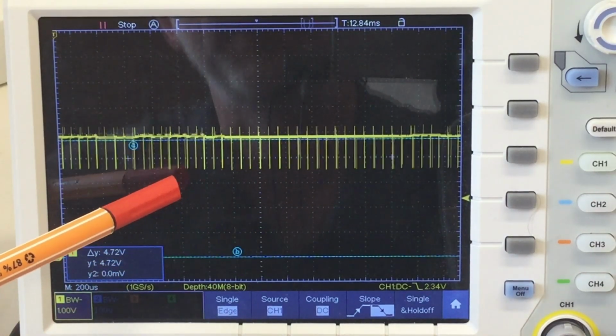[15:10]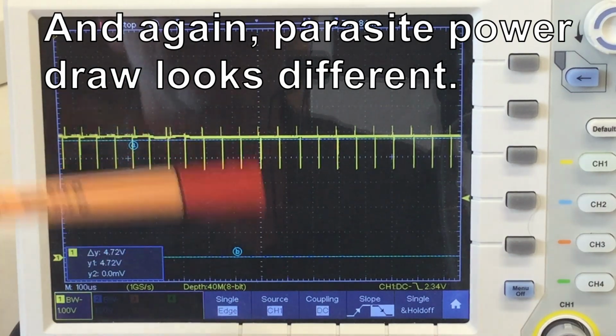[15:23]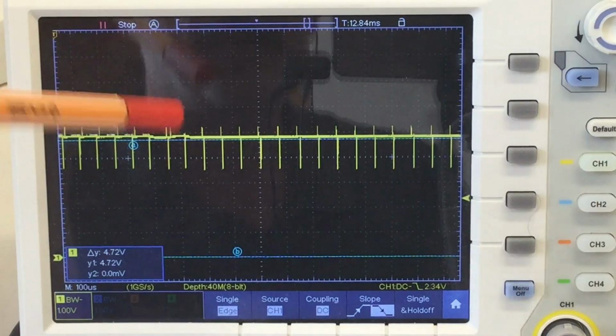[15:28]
We still have this scruffy stuff back here. I have no idea where this is coming from. As I said, usually I would expect to see something like this if they run off parasite power. Yeah, the DS18B20s, that is. No idea. Let's probe the other channel to see if it's also looking good, and then switch over to mains AC power and see if we experience any more glitches.
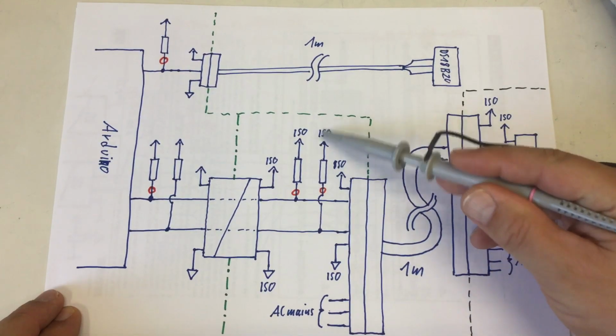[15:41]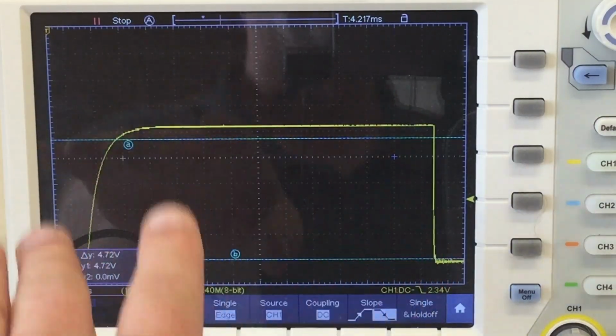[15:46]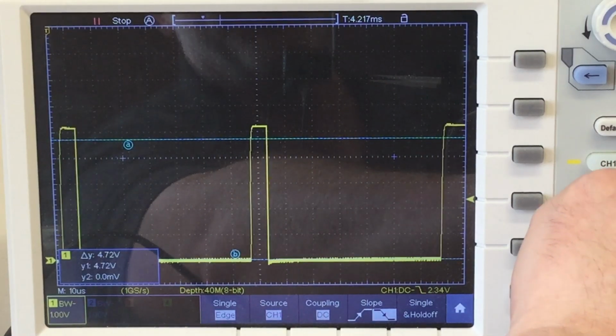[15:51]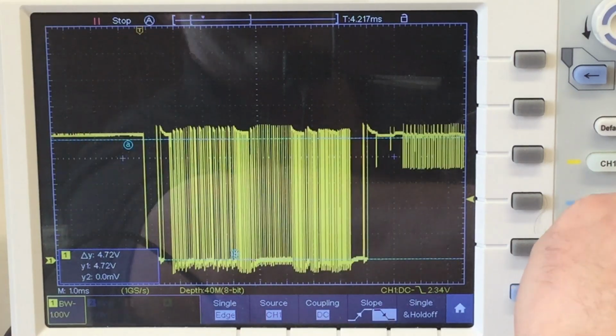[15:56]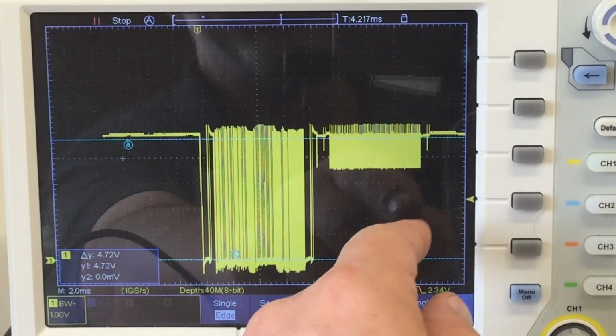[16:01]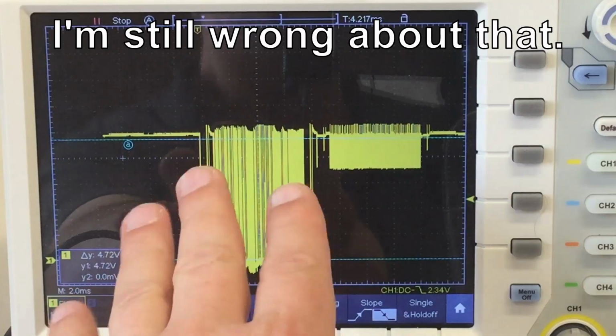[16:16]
And now at the pull-up resistor of the other one-wire channel. The other isolated channel is looking good too, and as I did before, I'm looking at one of the very short spikes here. And, well, we have the grizzle here. That's when the DS18B20 does its temperature conversion. And as I said, normally you see that when you run them on parasitic power, not on direct power.
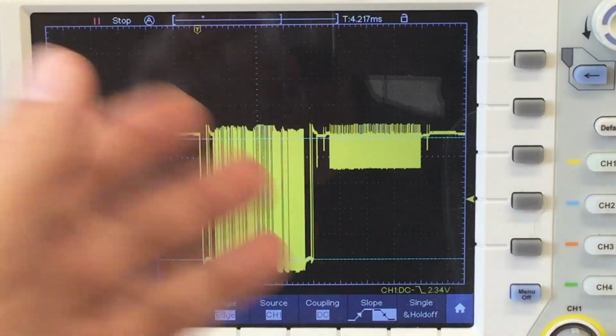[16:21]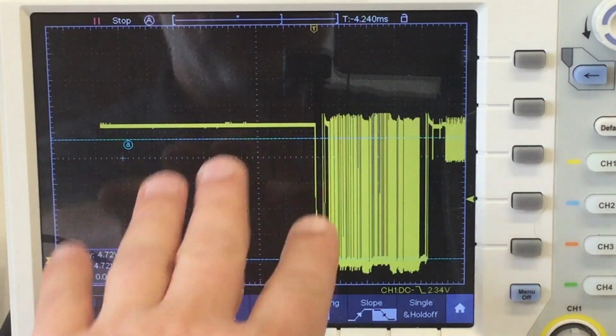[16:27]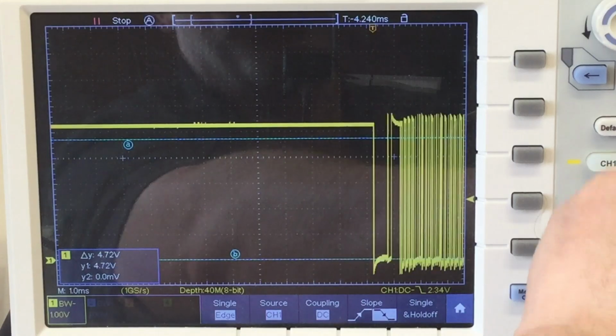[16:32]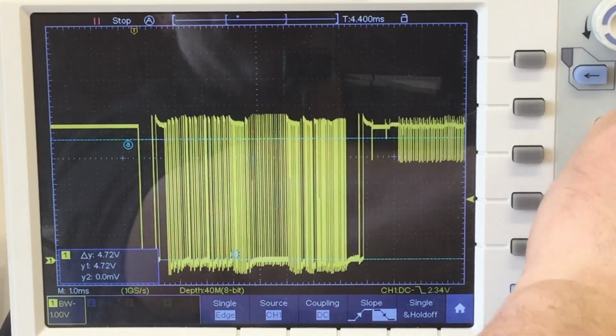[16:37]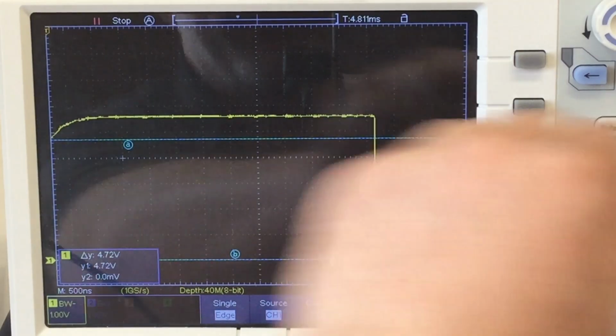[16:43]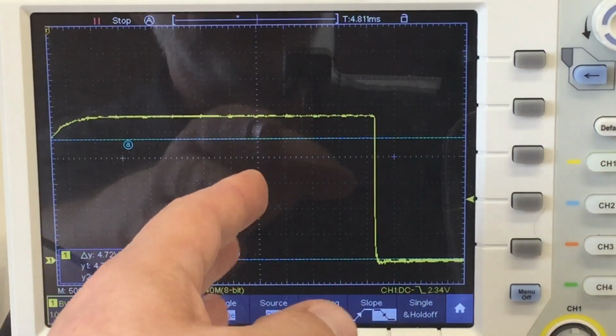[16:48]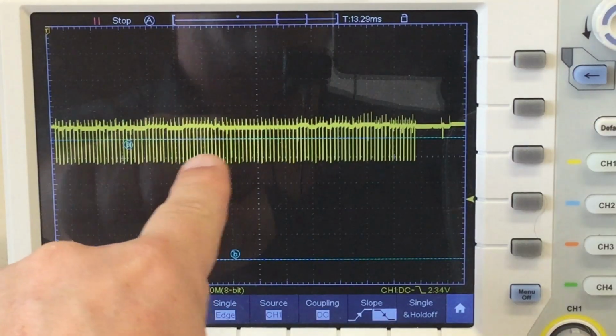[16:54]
Let's do the same with AC mains power. I stayed with my probe at that pull-up resistor here. AC mains power looks also good. And if I look at some really small peaks here, that group here in the middle, yeah, a little bit more noisy, but still more than good enough. And of course, there's still that stuff here in the back, and I have no idea why.
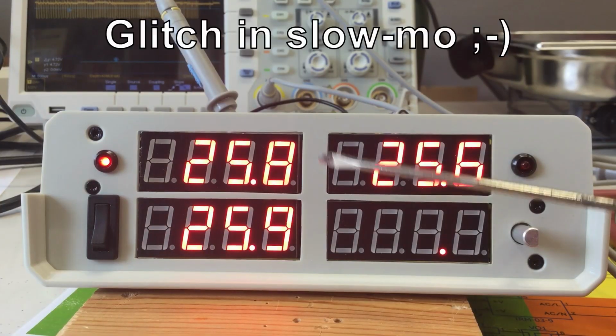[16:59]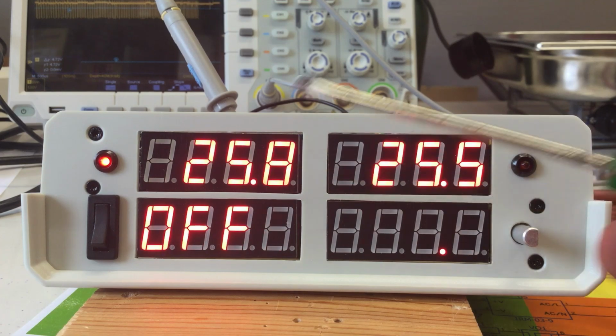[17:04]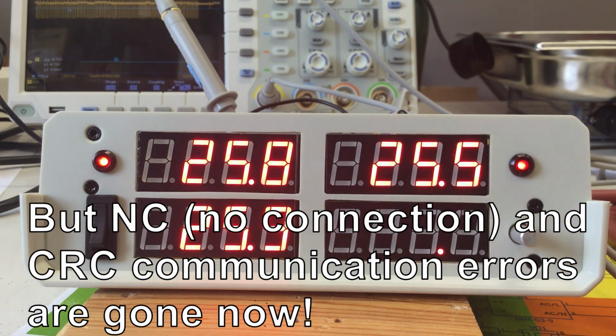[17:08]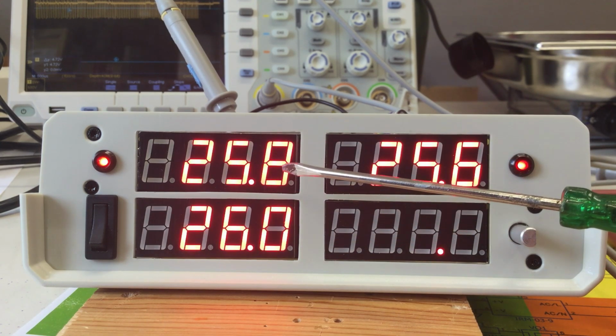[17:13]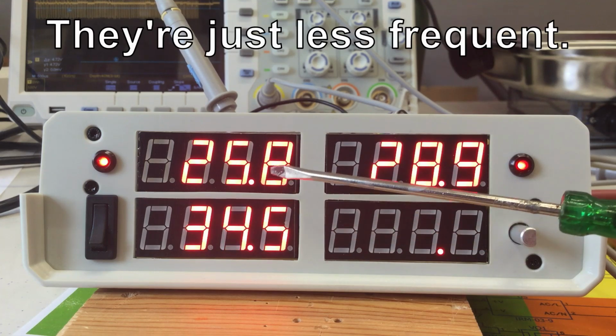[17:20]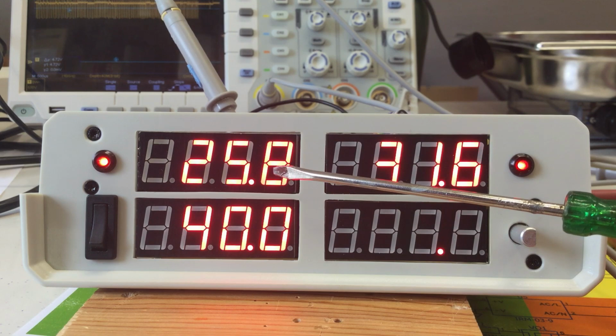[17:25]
Unfortunately, there it was. We still have these glitches, but as far as I can see, only on that sensor. Never saw a glitch on that one after we changed it. And here we have it. Again and again and again. And I have to say I'm a little bit weary now.
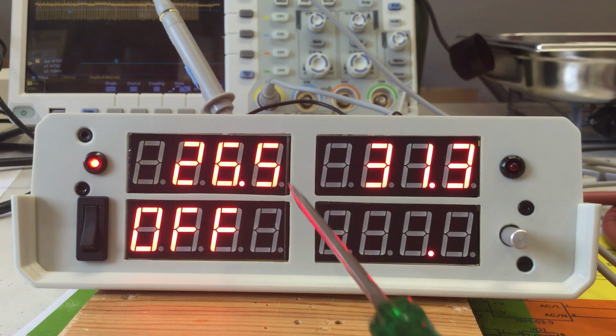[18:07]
Let me try something first. Let's switch off the heater and let me get a stopwatch. Okay, my theory is, because I saw that before, when I didn't give the DS18B20s enough time for their temperature conversion, then you get nonsense values out of the things. And I'm using here a Nano Every, which is running at 20 megahertz, and all other Nanos are running at 16 megahertz. So maybe there is still a bug in the software environment, and the delay function I'm using between each time I poll the temperature sensors is buggy. Let's see, I'm counting now.
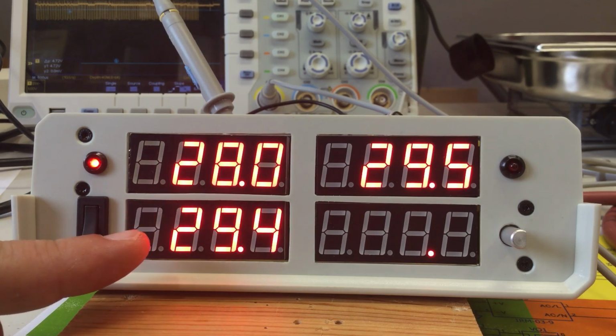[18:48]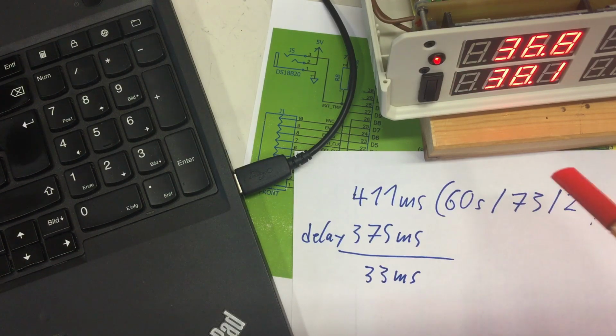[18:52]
So I counted twice, and both times I came to 73 cycles per minute. So I counted not 73 cycles, but 73 offs. An off is only displayed every second cycle. So one cycle took 60 seconds, divided by 73, divided by 2, 411 milliseconds.
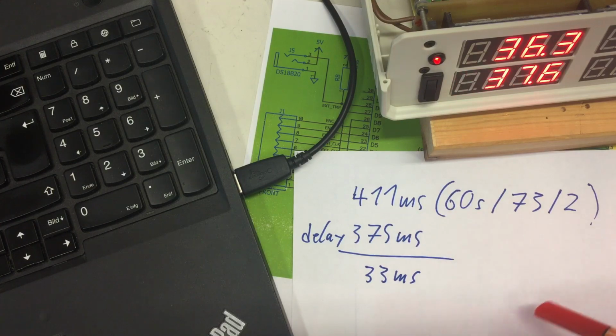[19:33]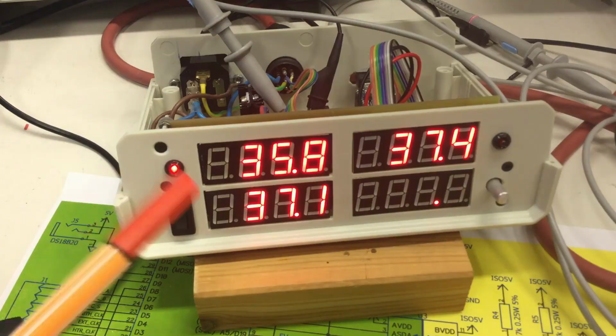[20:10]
And within a cycle, in Arduino code the loop, I first read the temperatures from the sensors, then I do some stuff like updating the displays, then I request a new temperature conversion for the sensors, then I have a delay statement of 375 milliseconds, and then I start again in the loop with reading the temperatures. And the delay for the 4 megahertz faster Arduino Every seems to be okay. I mean, 33 milliseconds for all the updating stuff, that's realistic. So there is a delay of 375 milliseconds. Anyway, I slowed down things by a factor of 2, and I'm still getting glitches.
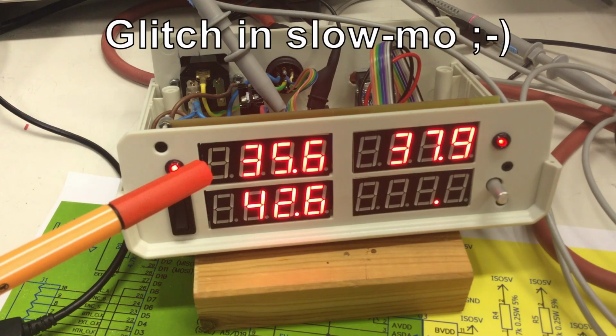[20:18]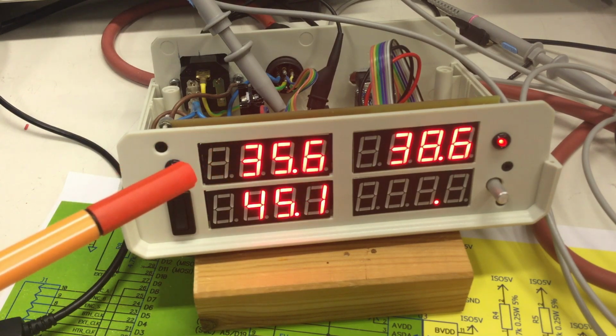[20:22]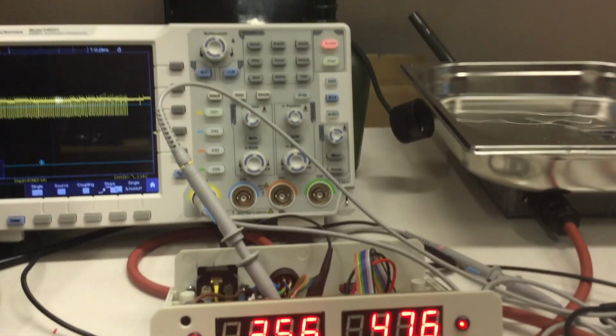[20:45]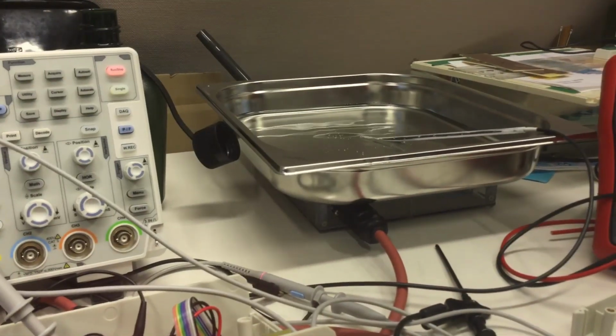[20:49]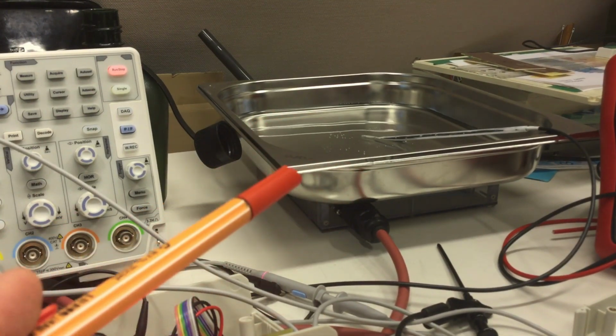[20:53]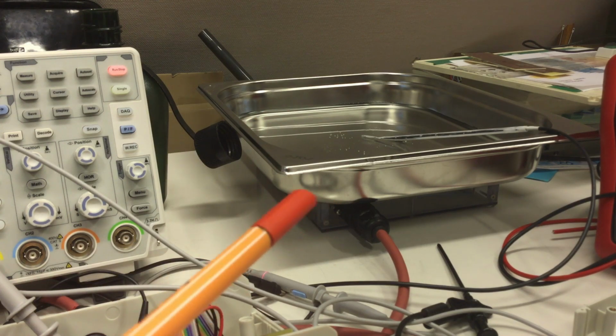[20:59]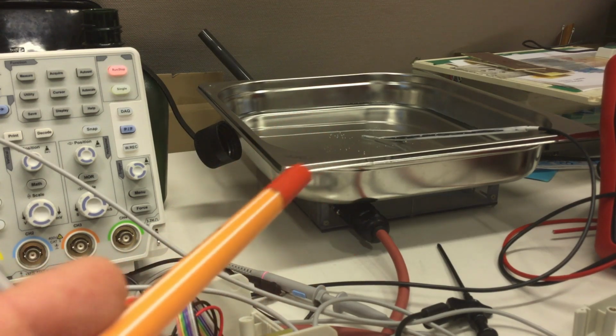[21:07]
Of course, now I don't get a glitch. There it is. So it's not a timing problem regarding the temperature conversion time these DS18B20s need. Also the signal looks good now. So I'm wondering if I might have actually, in that fateful first test that failed, fried the sensors. Maybe they got overheated. I mean, temperatures went up to 150 degrees, measured with thermocouples. So next step, replacing the sensors.
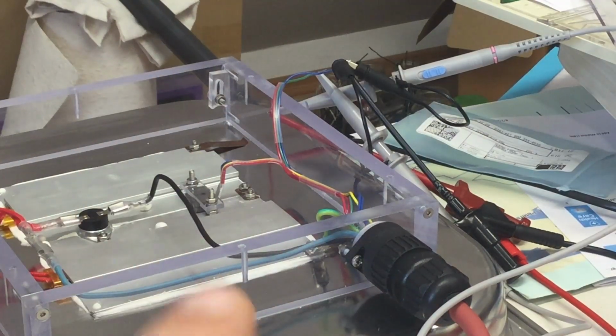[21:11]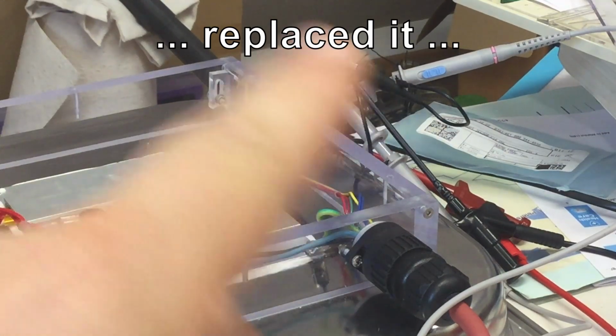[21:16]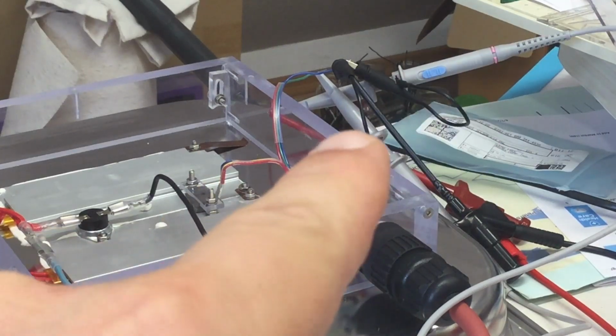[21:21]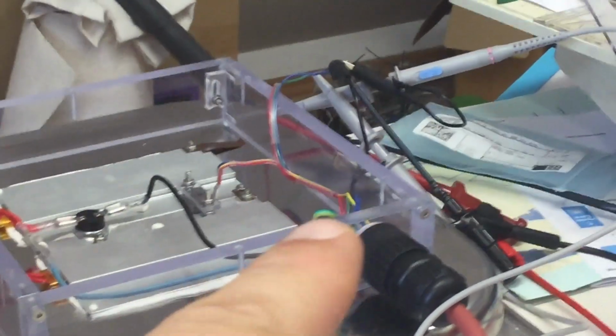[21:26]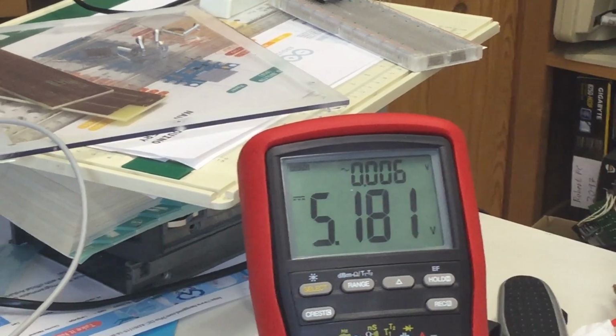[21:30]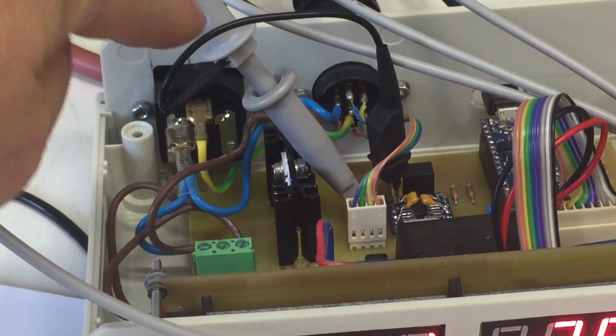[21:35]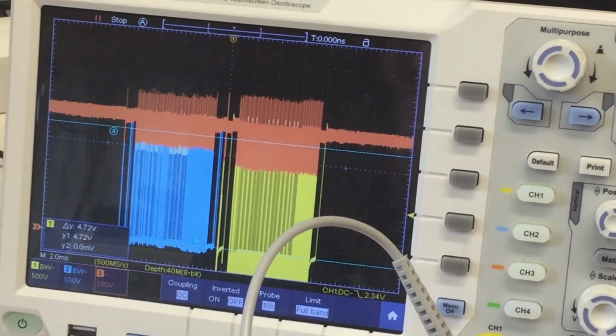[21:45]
I'm getting kind of desperate. I desoldered one sensor in the water bath and connected there. Yeah, that's that nest. Two oscilloscope probes, one measuring the signal line, one measuring the power line. And the power line is displaying 5.18 volts perfectly. I'm also measuring the data line of the second isolated channel. And this is all available on the scope.
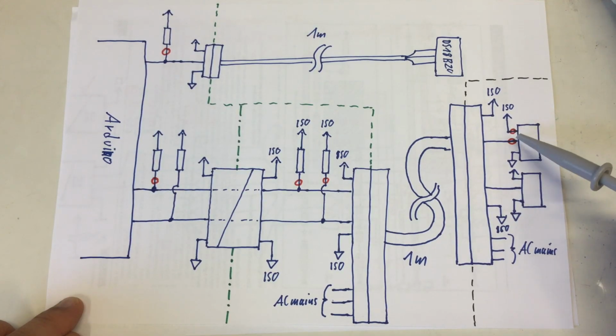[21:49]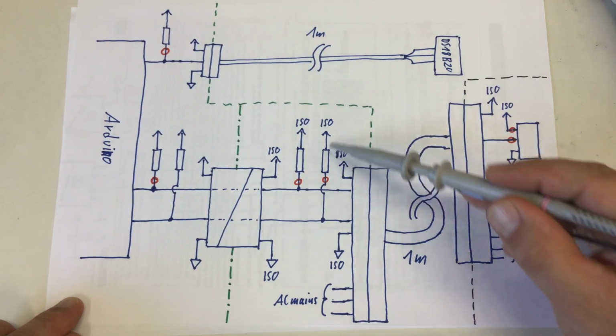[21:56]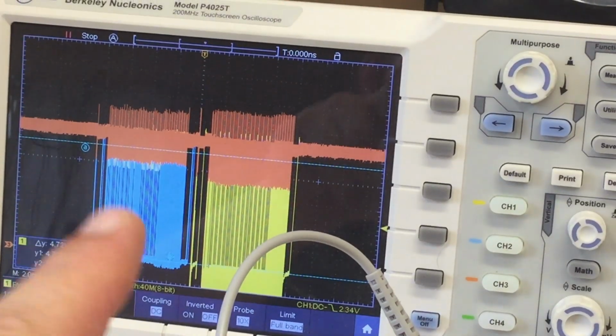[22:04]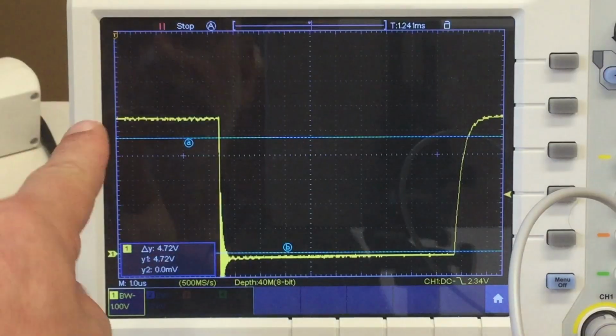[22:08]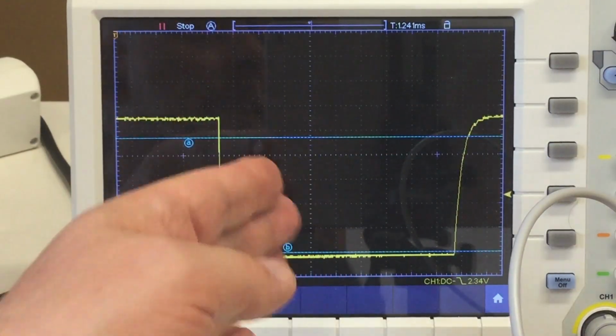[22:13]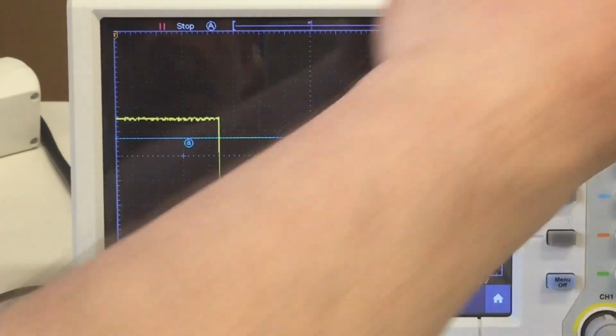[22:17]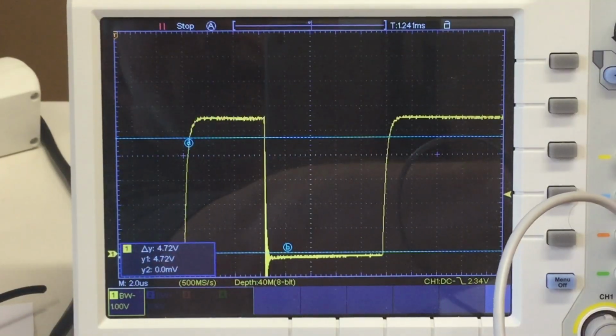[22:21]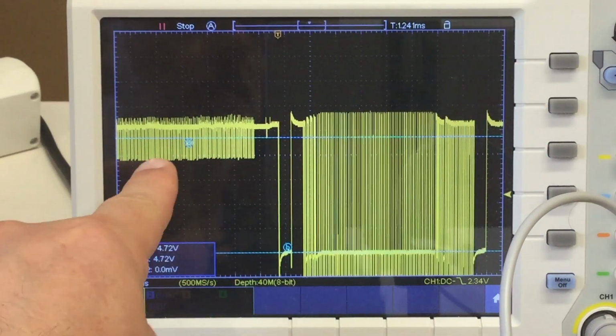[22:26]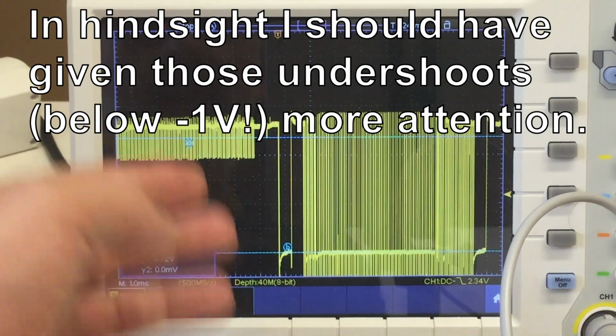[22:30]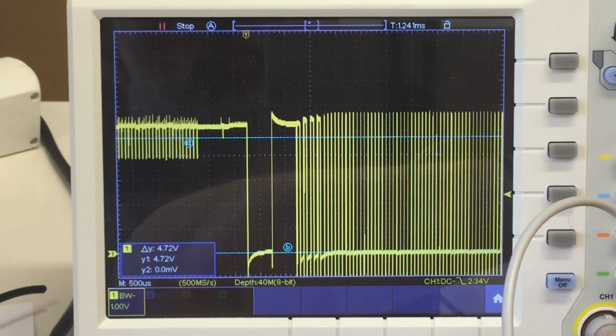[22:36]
So I'm probing the isolated 5 volts and one-wire channel directly here at a DS18B20 sensor, and the second one-wire channel here at the pull-up resistor right after the digital isolator. We will have a detailed look here, and there are some surprises. So that's the signal at the end of the line from the master, or what comes out of the digital isolator. Now, when we zoom in here, zoom out a little bit, you see there's still spiky stuff, and this has to come from the digital isolator or the master. One would assume, right?
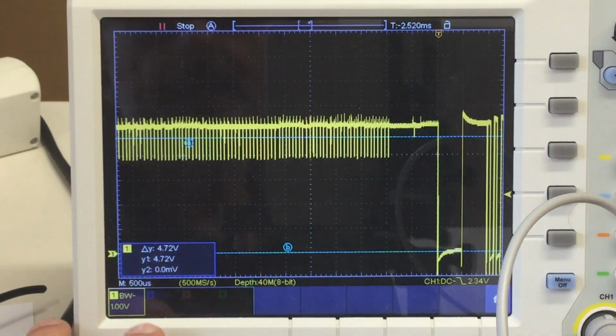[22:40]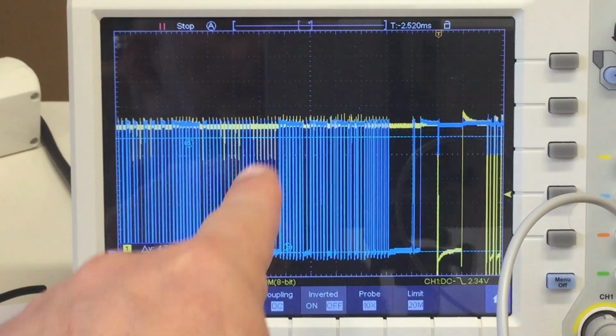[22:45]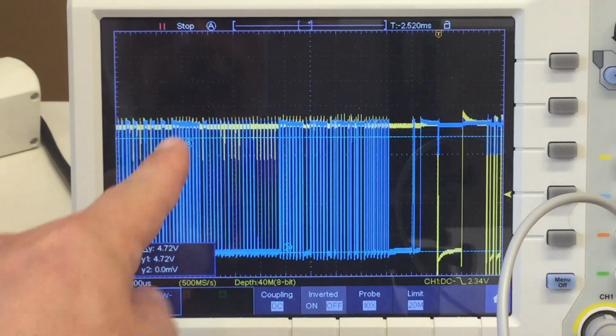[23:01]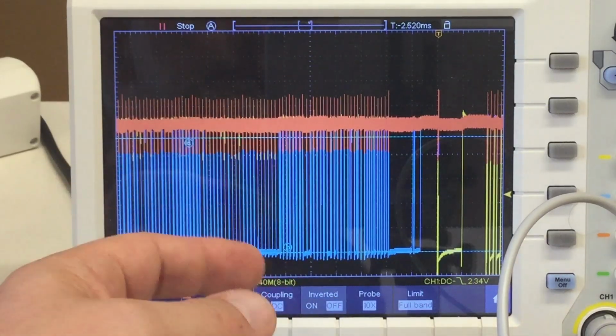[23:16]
Now let's activate the second data channel. You see what? It's not something that's going on my first channel, but these spikes are caused by the activity before on the other channel. Yeah, if we look at the power rail in that time frame, this is over 2 volts noise on the power rail. Yeah, check your powers. So something is definitely wrong here.
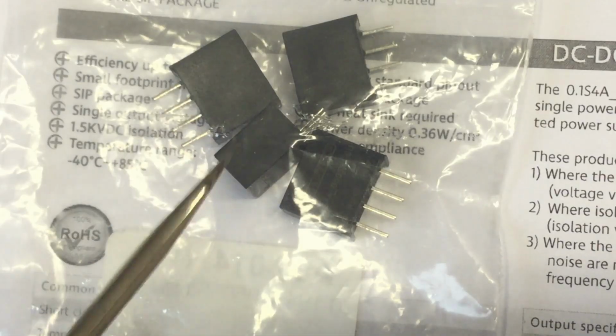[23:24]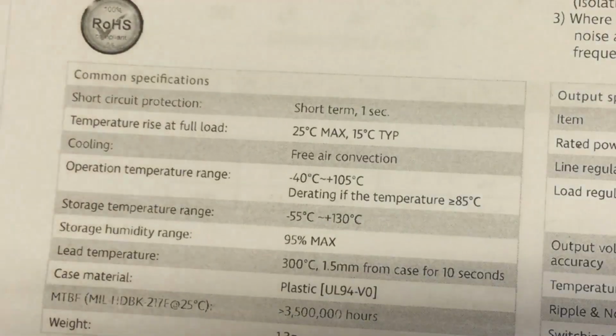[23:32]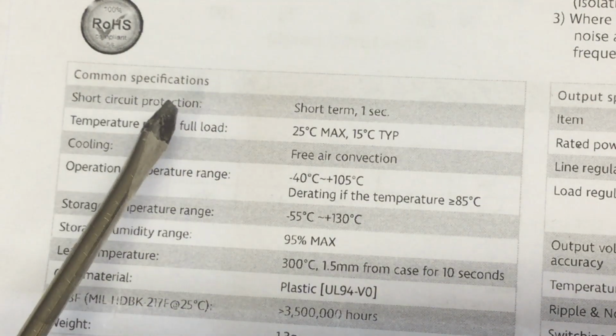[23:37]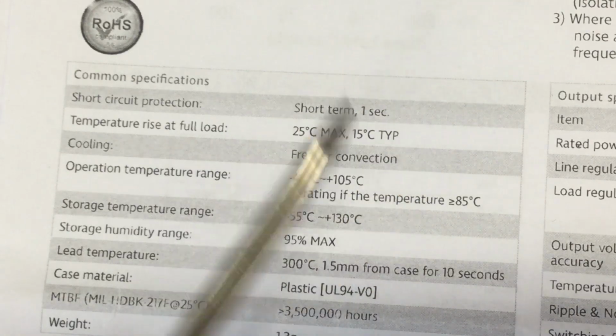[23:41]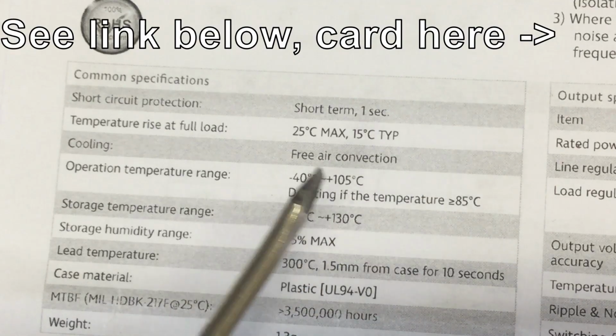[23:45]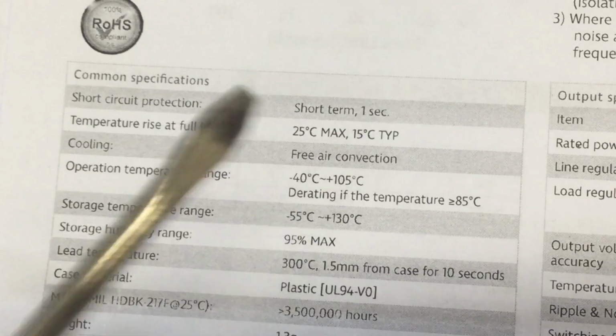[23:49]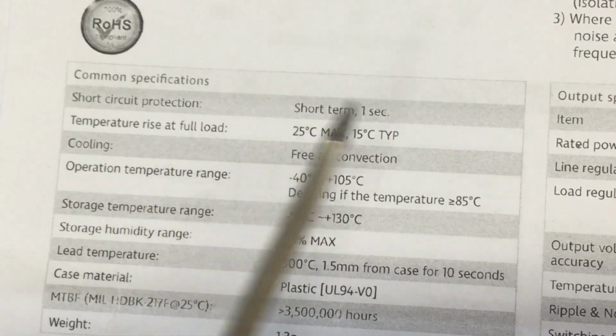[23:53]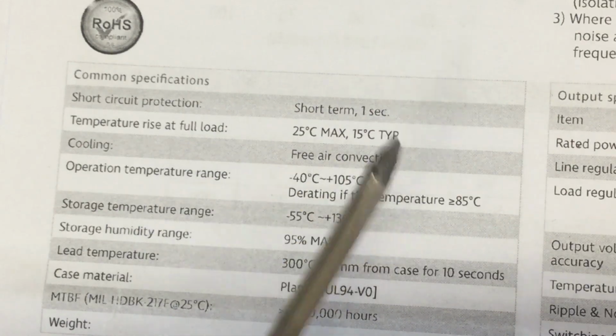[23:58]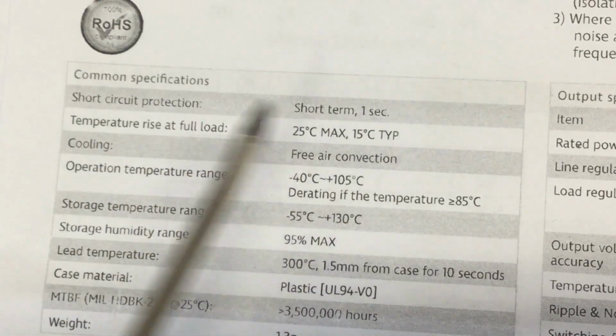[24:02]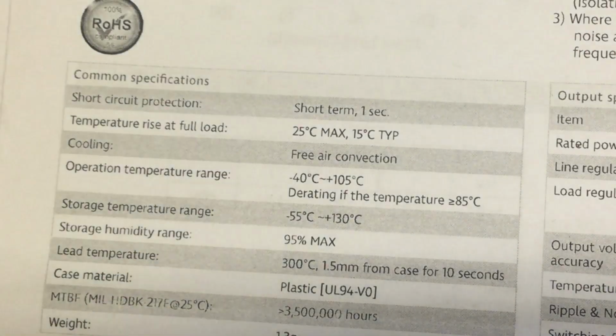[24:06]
Well, a look into the data sheet for my 100 milliwatt DC-DC isolated converters informs me right away, first line, short circuit protection, short term 1 second. When I had the digital isolator the wrong way around, the power rail went down to 0.5 volts. So basically a short. And I did that for minutes at a time, several times. So might be time to get the board out again and put a new one in.
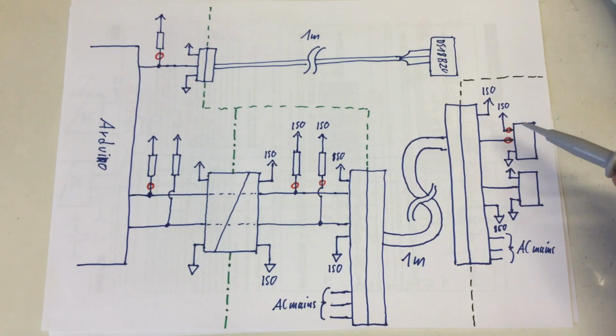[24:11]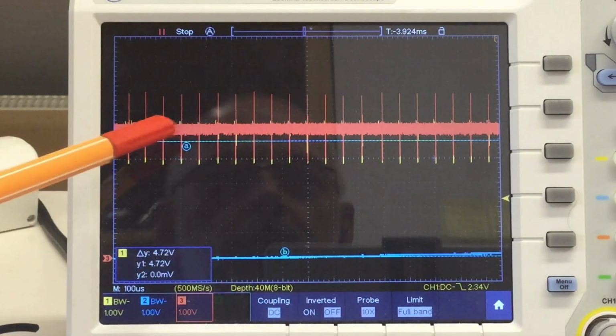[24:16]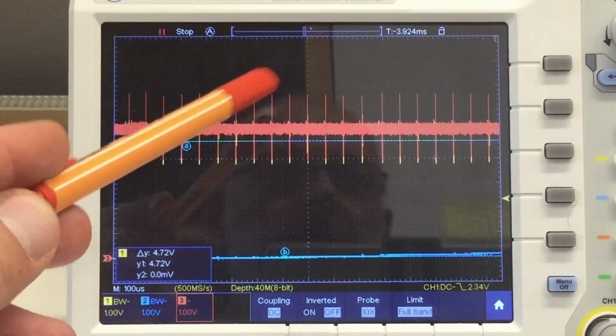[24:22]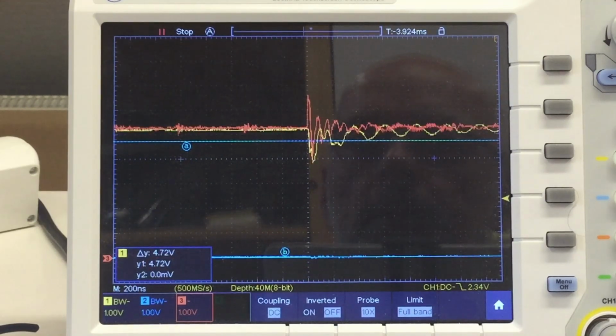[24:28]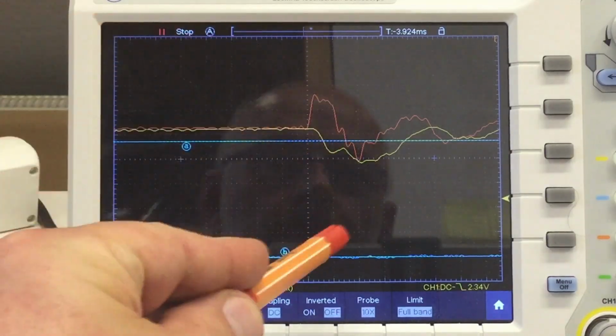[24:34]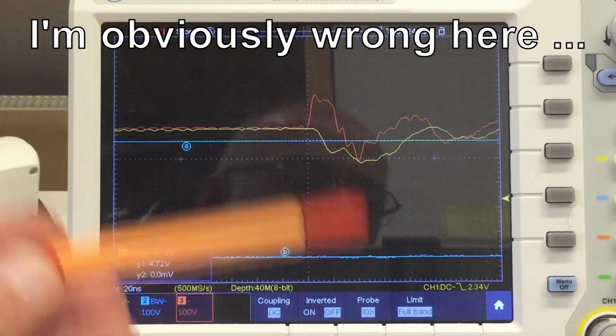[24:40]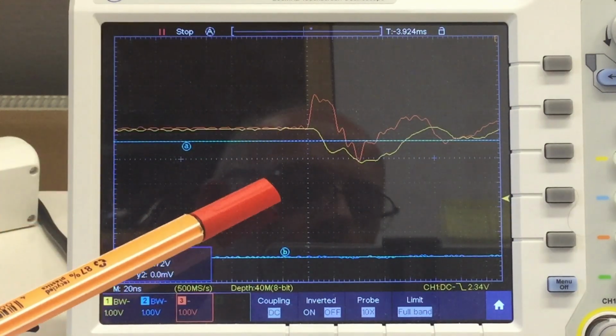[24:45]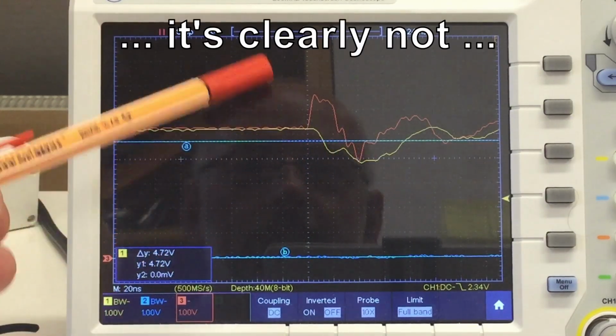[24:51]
Still probing the 5 volt and the signal directly here at the DS18B20 sensor. Nope, replaced that DC-DC converter, and we still have spikes, and if you look into them a little bit finer, it's a ringing. It's really these cheap DC-DC converters. If you suddenly pull 4 milliamps or so, or a little bit less than 4 milliamps, through the pull-up resistors, that's the reaction. I mean, come on!
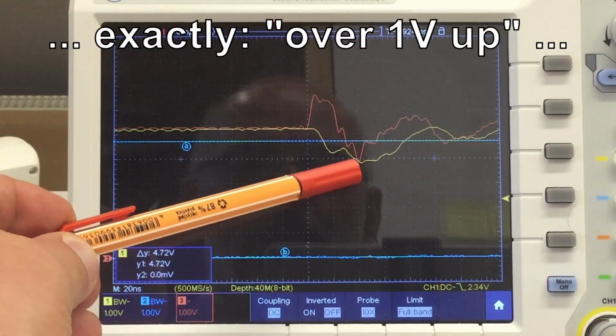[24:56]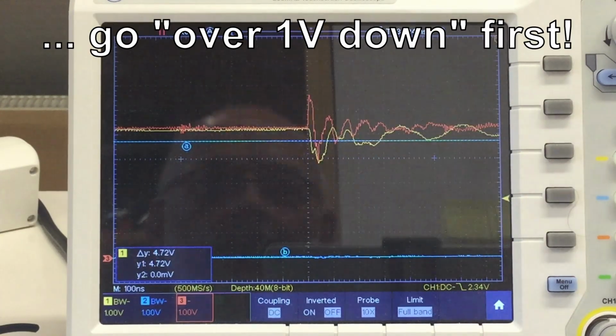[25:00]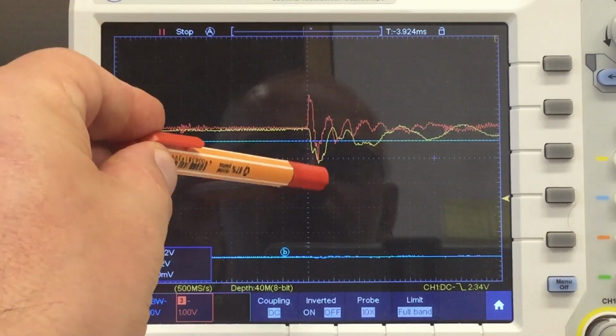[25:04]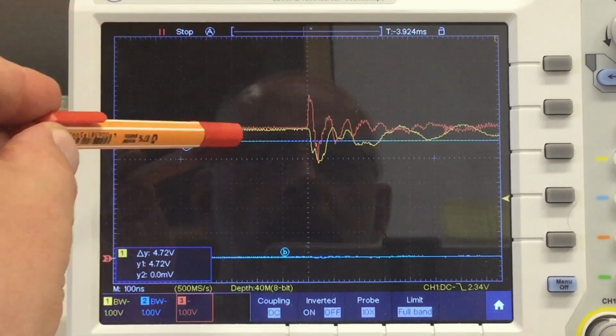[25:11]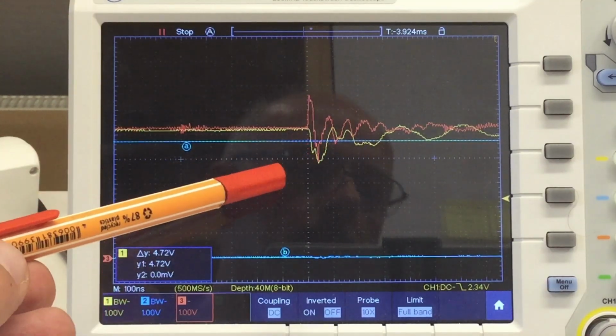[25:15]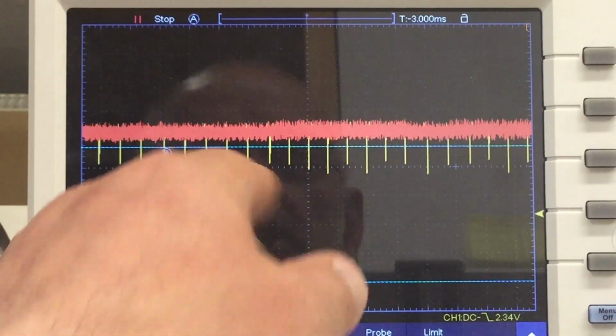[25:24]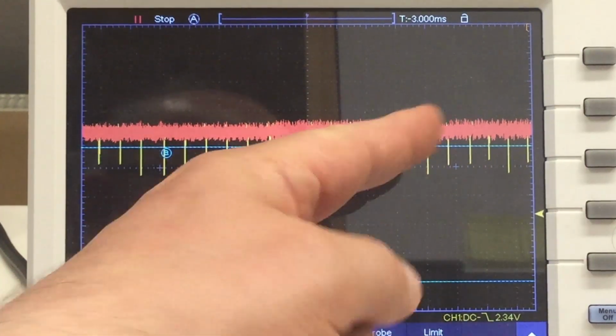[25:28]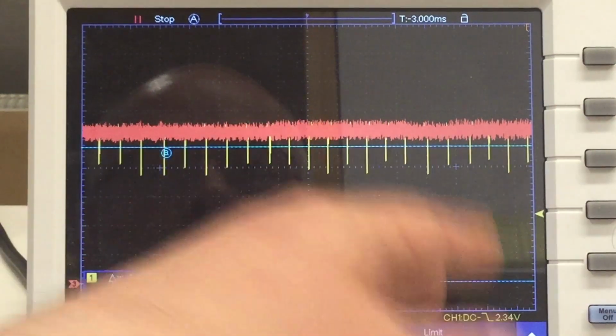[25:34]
Over a volt up, and over a volt down again, and then a little bit of ringing until... And of course, that is reflected in the data line. Not the spike up, but the spike down. Oh, Jesus. Haven't moved the probes, they are still here at the DS18B20. I botched in a 0.1 microfarad ceramic capacitor just where I connected the probes. I'll give you a close-up in a second. And yeah, they're gone, but they are still on the data line.
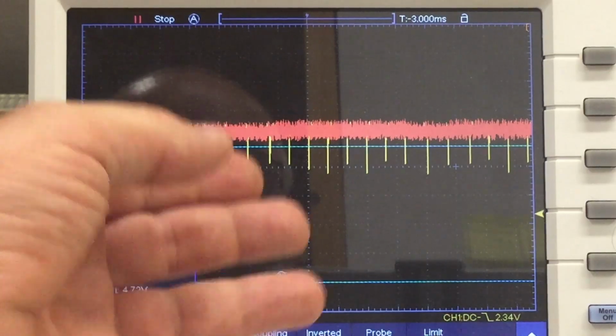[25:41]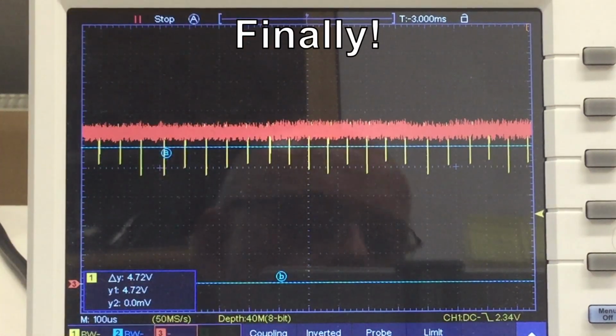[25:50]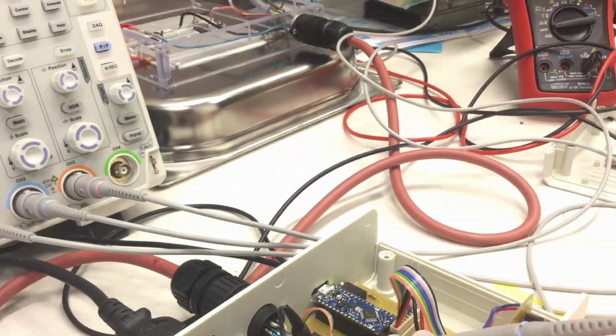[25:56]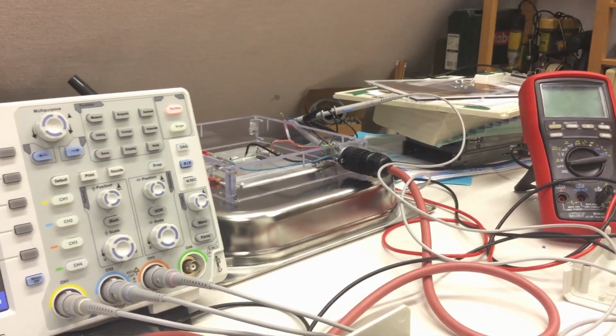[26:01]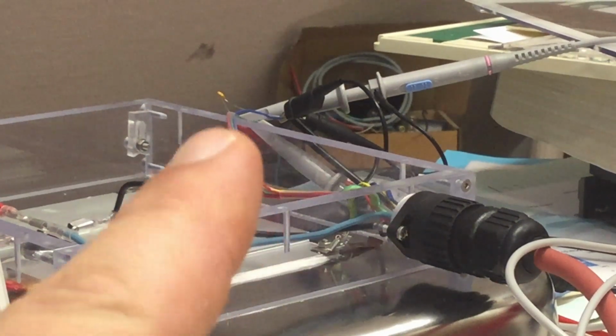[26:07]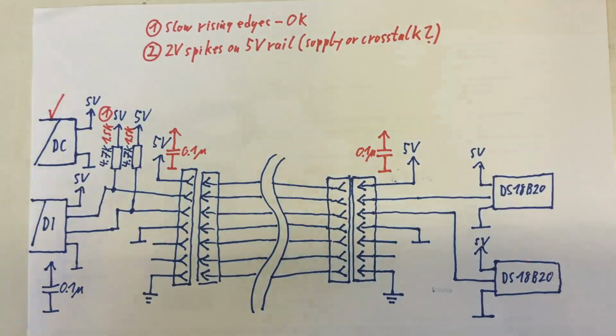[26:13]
So I'm not sure if that is really a power supply problem or if that is crosstalk in this pretty long, big cable. And there in the distance you can spot, can I point to it? The tiny 0.1 microfarad capacitor. This is getting ridiculous. So let's take a step back and see where we came from and what we've done so far.
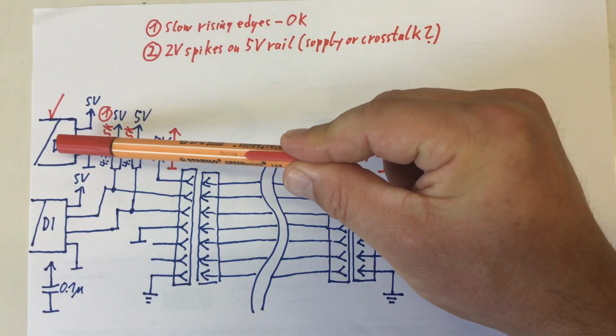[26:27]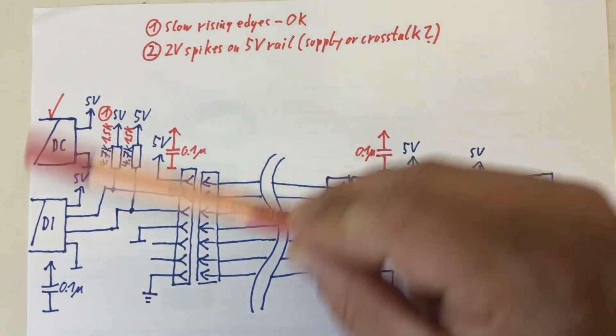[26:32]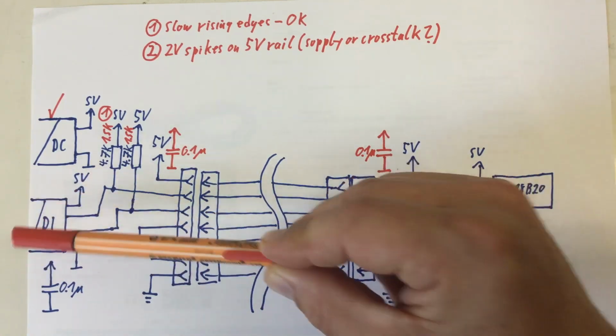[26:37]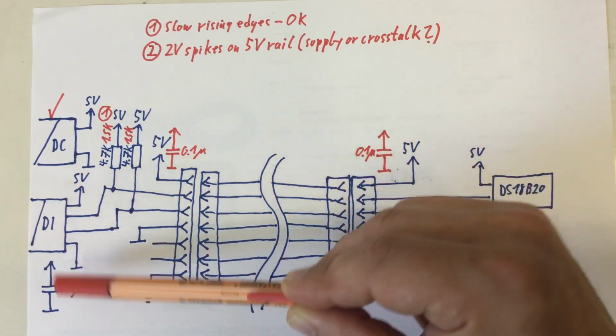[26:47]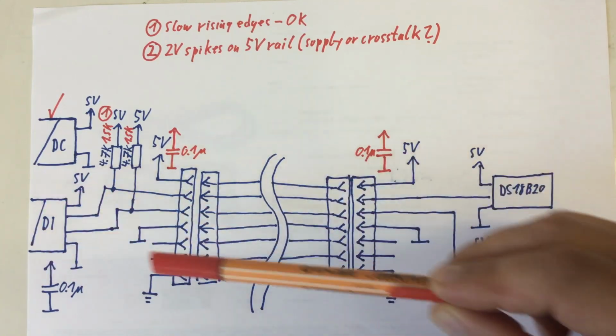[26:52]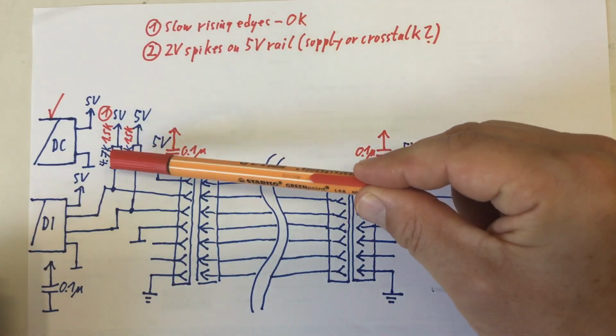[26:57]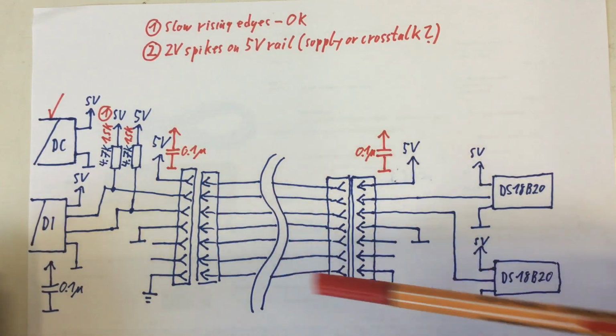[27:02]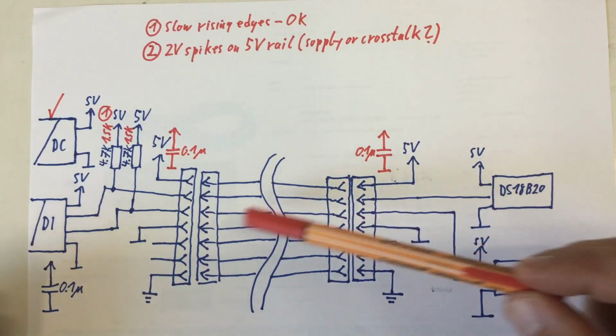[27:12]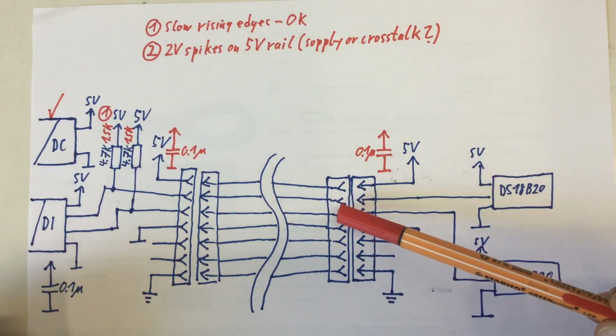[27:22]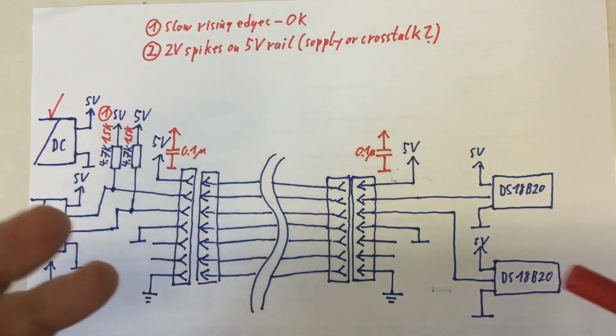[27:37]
So on the controller side, I have my DC to DC converter providing my isolated 5-volt rail for the whole shebang. I have my digital isolator, only drawn 1/2, that uses that 5-volt rail, gives us 2 bidirectional digital channels, open collector of course, and that always had a decoupling capacitor of 0.1 microfarad across its power rail. And we saw no problems here. We had initially the usual 4.7K pull-up resistors on our 1-wire buses, and then we have these 2 big connectors with 1 meter of a power line running between them, and 4 wires in that power line are used for our 5-volt rail and our 2 1-wire buses. And on the bath side, we simply had 2 DS18B20 sensors, getting 5 volts, no phantom power, and each with its own 1-wire bus.
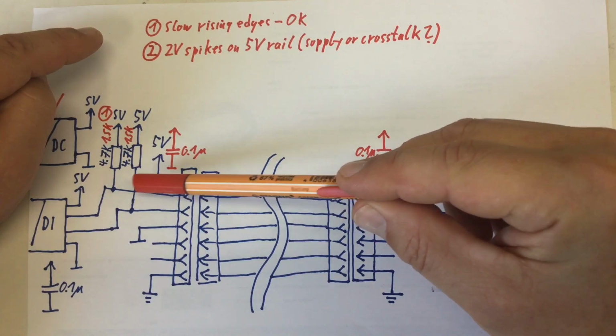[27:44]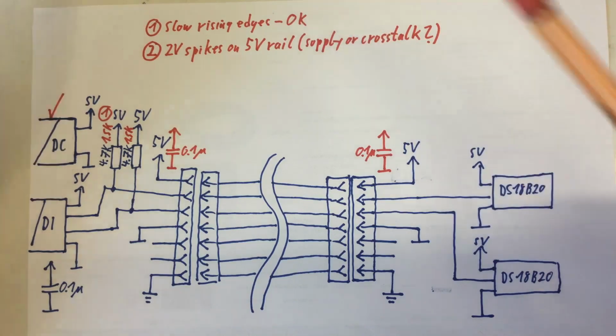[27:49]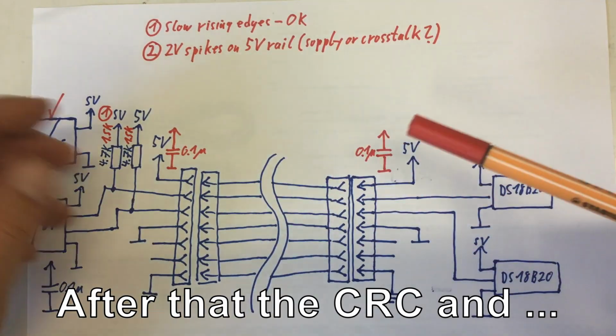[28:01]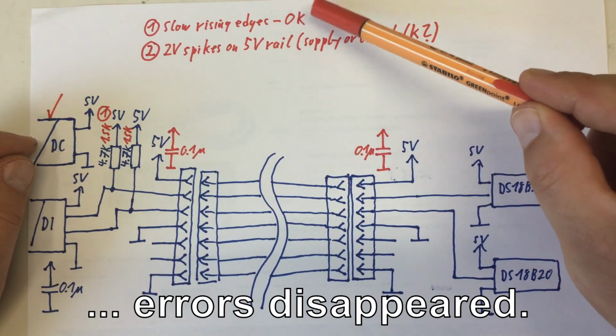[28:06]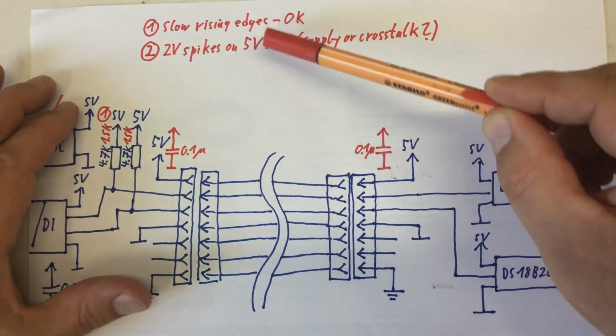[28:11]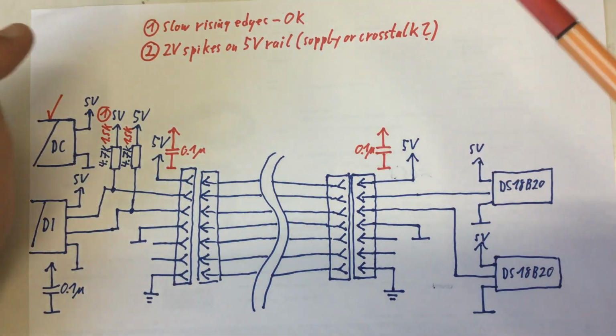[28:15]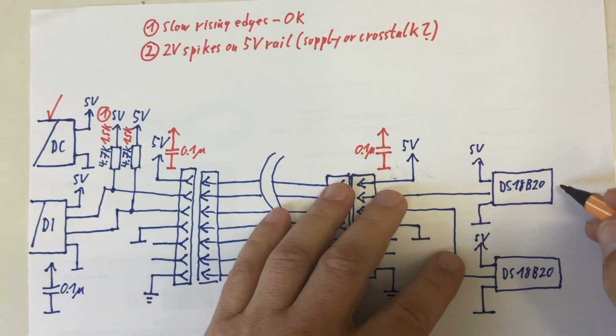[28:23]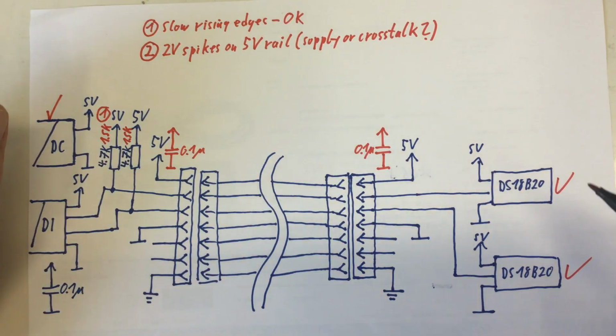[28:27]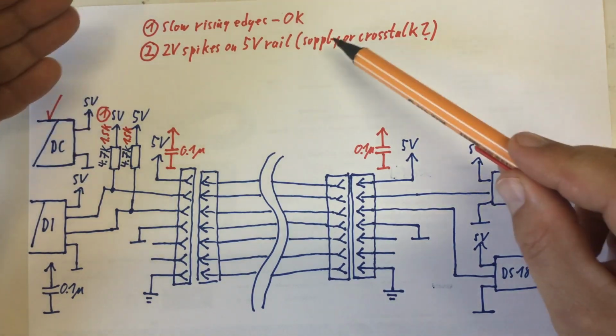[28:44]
Now, when we looked at the signals on that side with our oscilloscope, we saw slow rising edges. So we decreased the size of the pull-up resistors from 4.7K to 1.5K, which is the limit, you cannot make them much smaller than that. And that solved the problem. Our rising edges still have a little slope, but it looks absolutely okay. Then we saw, when I took out one of the DS18B20s, and by the way, we checked, they have not been damaged in any way, as we have exchanged the DC to DC converter, which is also not damaged. Anyway, we saw these 2 volt spikes on the 5-volt rail, which is not very nice. We suspected the supply, but obviously not.
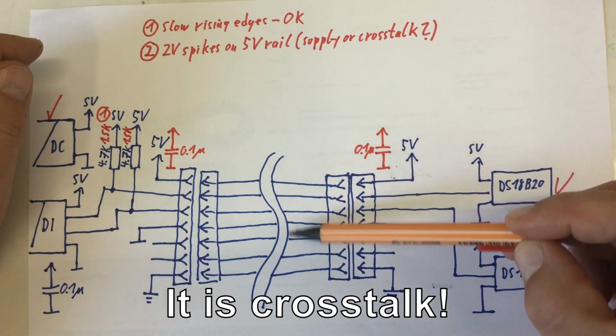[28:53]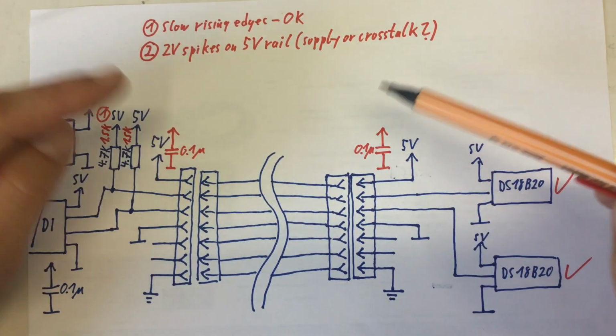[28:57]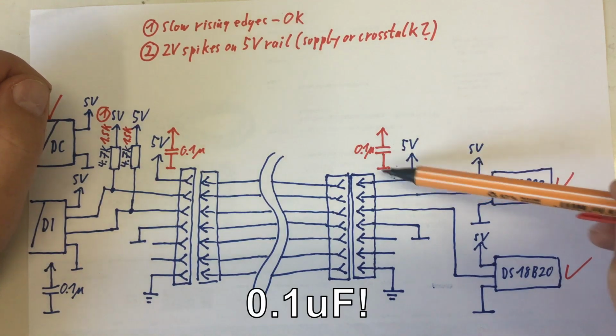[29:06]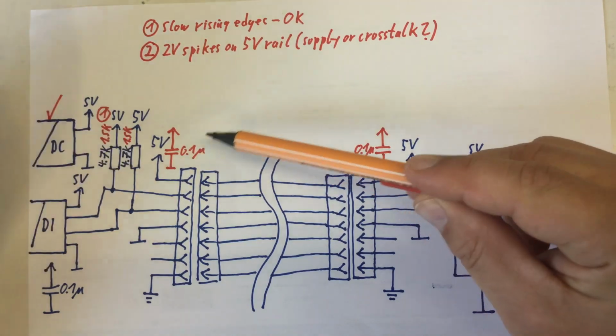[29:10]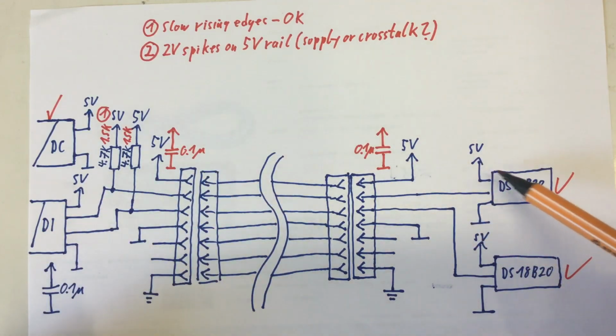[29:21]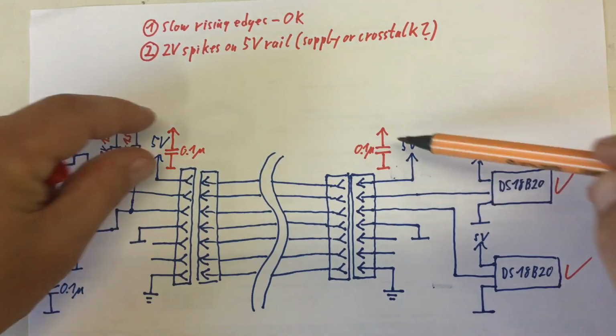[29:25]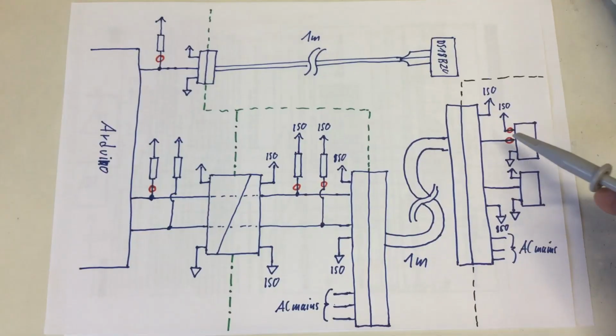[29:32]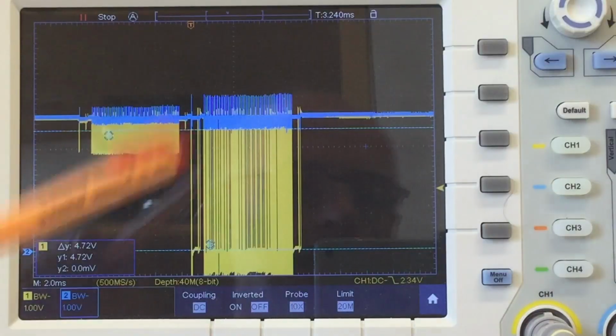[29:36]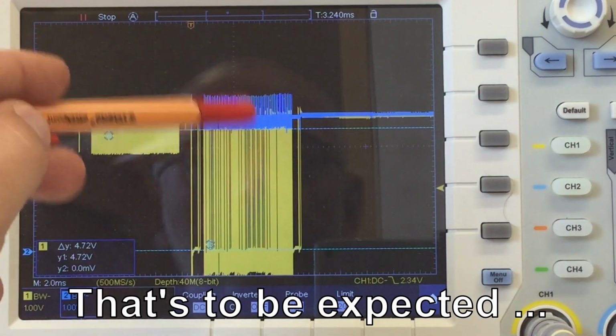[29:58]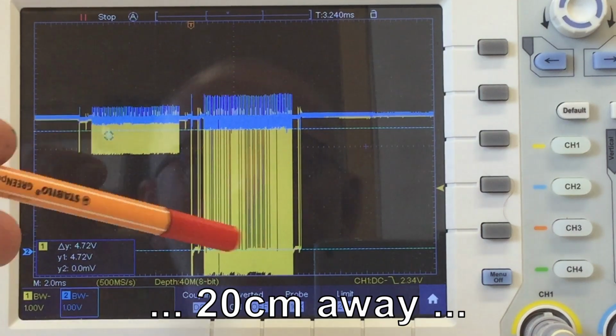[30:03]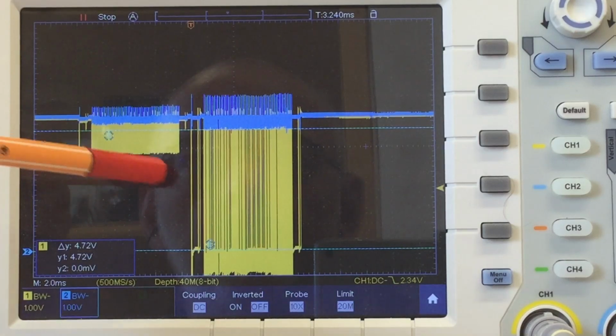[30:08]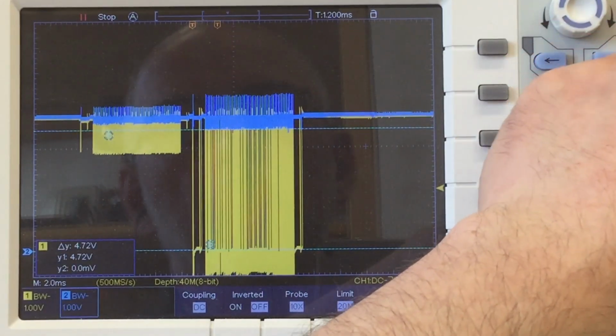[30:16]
Right away the spikes here, the crosstalk from the other channel, it's back again on my blue power rail. I'm still measuring directly at the DS18B20. And we have also spikes here on the power rail when the DS18B20 is active itself. But the spikes here are about 700-800 millivolts. Let's zoom in on that.
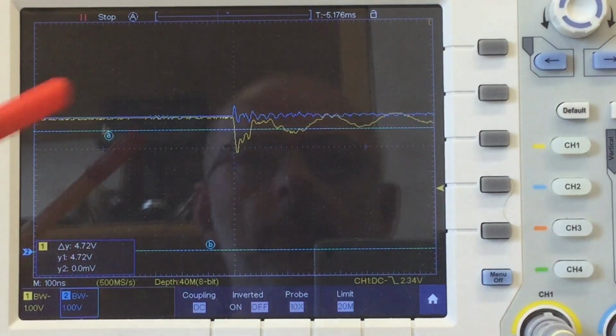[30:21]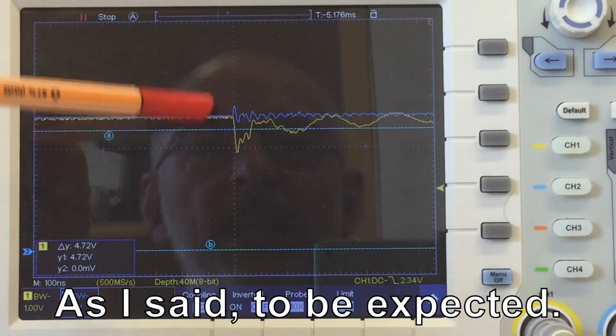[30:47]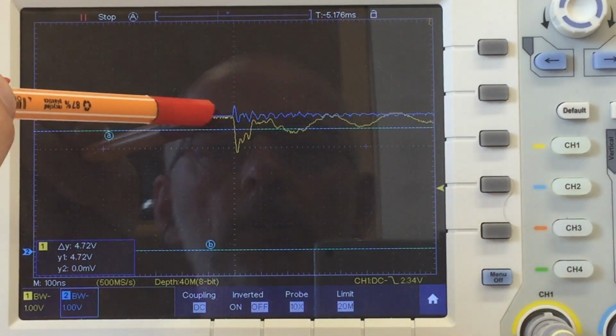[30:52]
Yeah, that's not too bad. Maybe 600 millivolts peak to peak. That's survivable. I mean, it's not as nice as when I put the 100 nano directly to the pins of the DS18B20, but then the DS18B20 has an internal capacitor. It doesn't feed directly from the 5-volt rail. But we still have here an undershoot, that crosstalk from the other sensor.
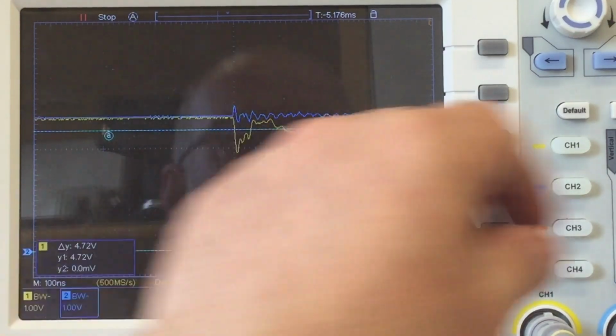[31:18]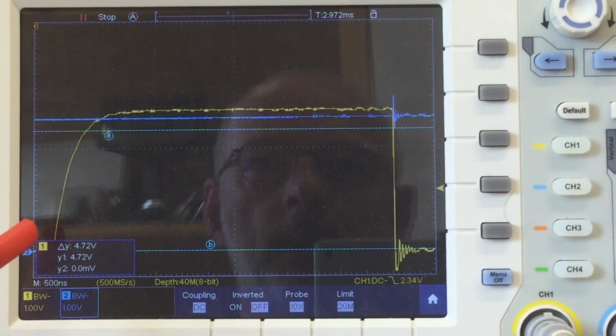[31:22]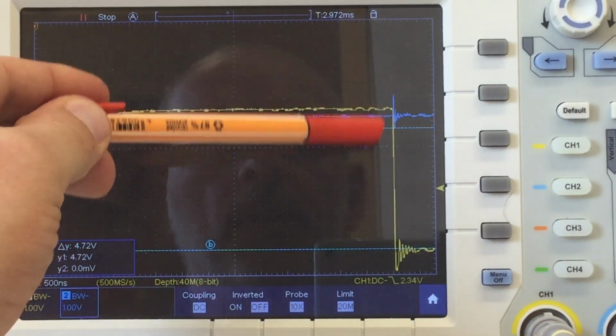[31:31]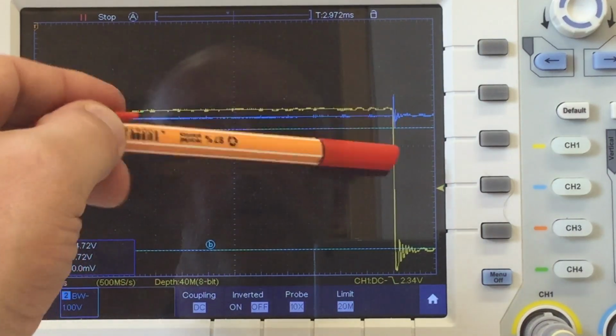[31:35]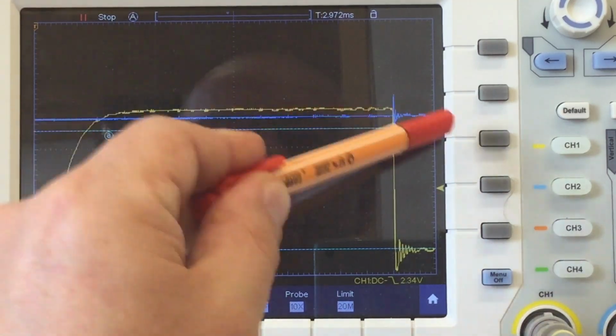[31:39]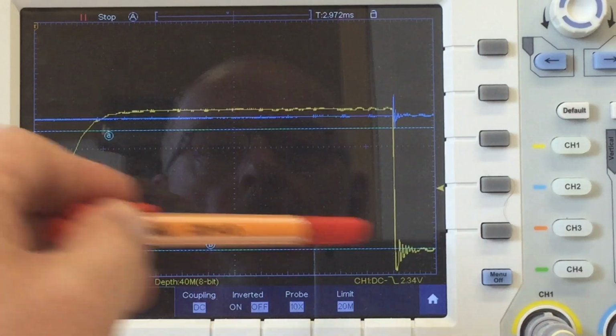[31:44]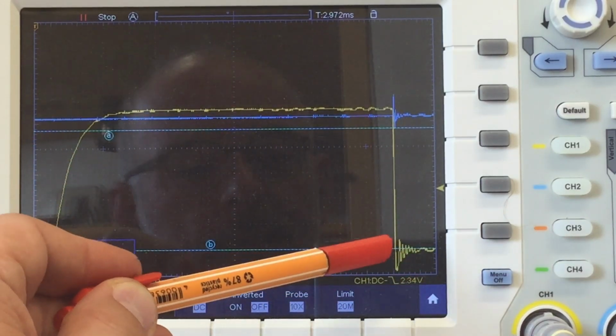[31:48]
Yeah, that's easily 1.4 volts. But it's not going too far down that it could be interpreted as a low by the DS18B20. My signal, that's a short pulse. It still looks okay. We have also here the ringing, which is a good volt peak to, more 1.4 volts on the power supply. And here that ringing, it's not nice, but it's a one-wire bus.
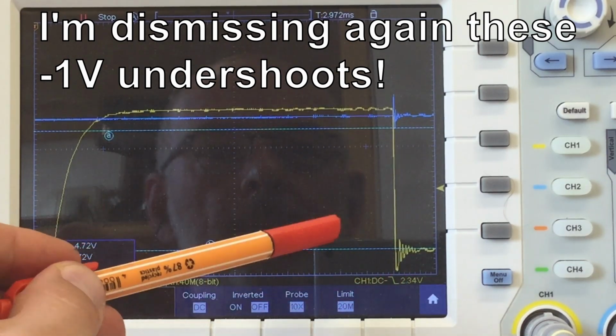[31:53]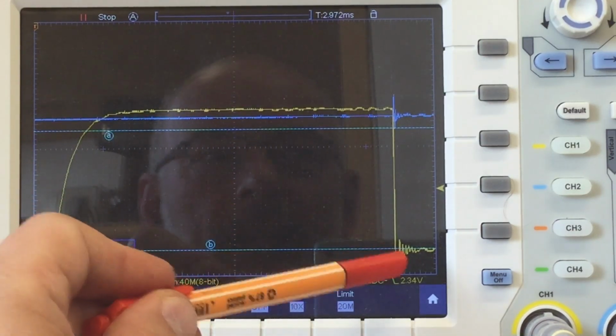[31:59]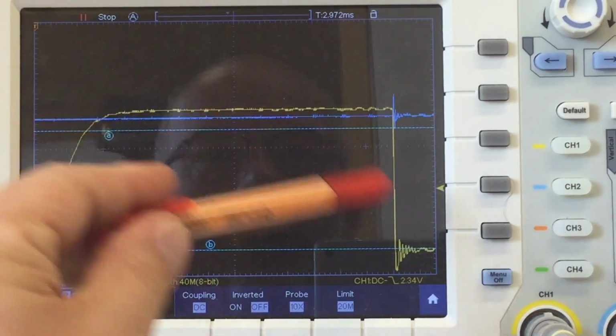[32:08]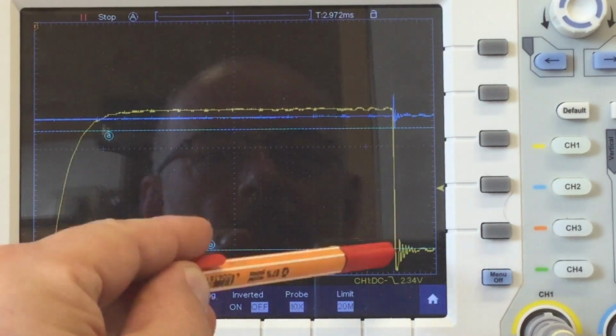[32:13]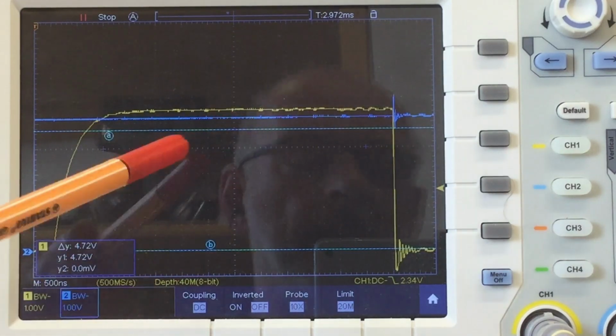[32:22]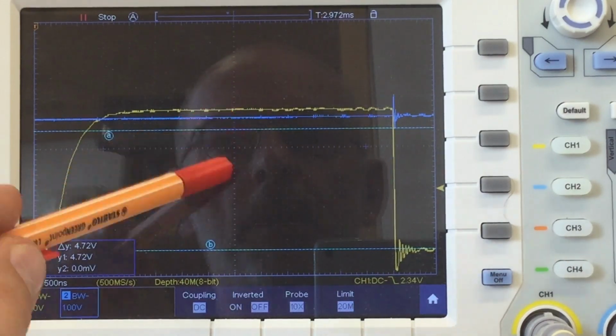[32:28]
I don't know. I've read in some papers that on long wires, and we don't have a long wire, they add an RC element to the data line. Let's see what happens if I put a small capacitor just on the data line. So I don't know, 1 nanofarad or something like that. But before that, let's do the same measurement in the controller on the board itself to see what's happening there.
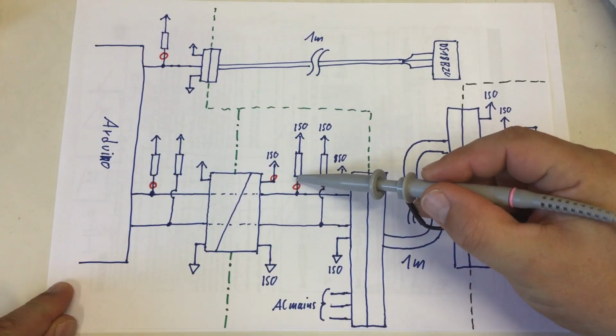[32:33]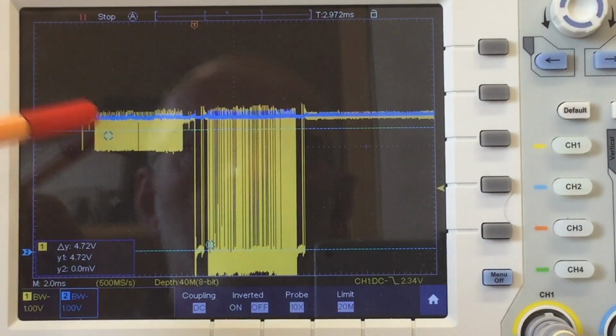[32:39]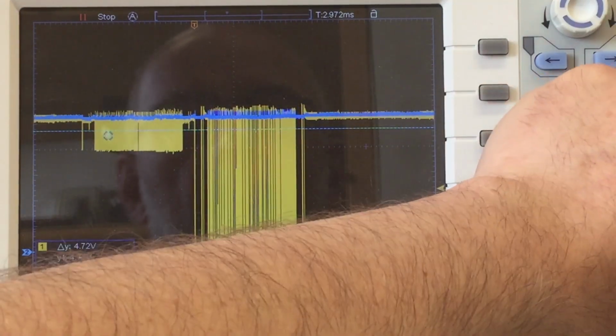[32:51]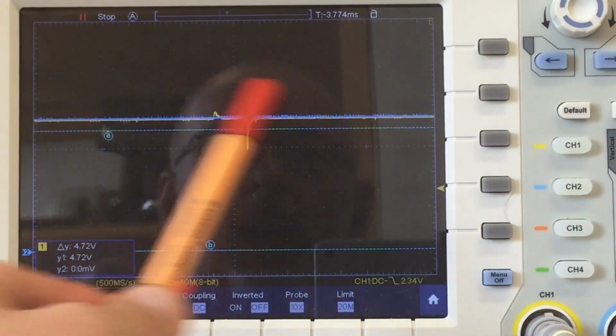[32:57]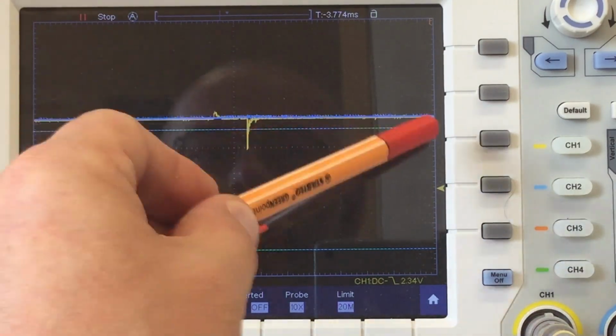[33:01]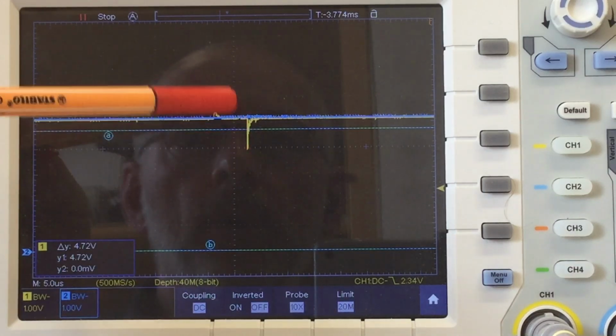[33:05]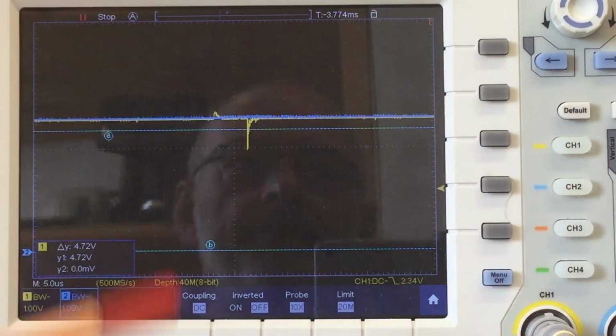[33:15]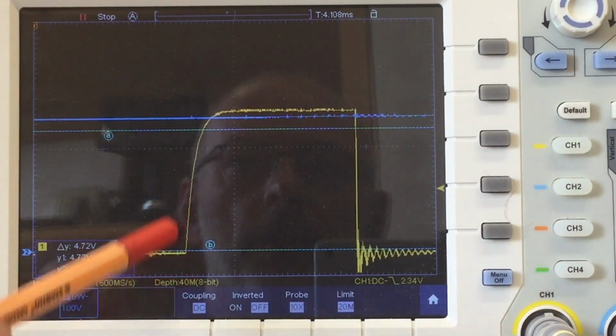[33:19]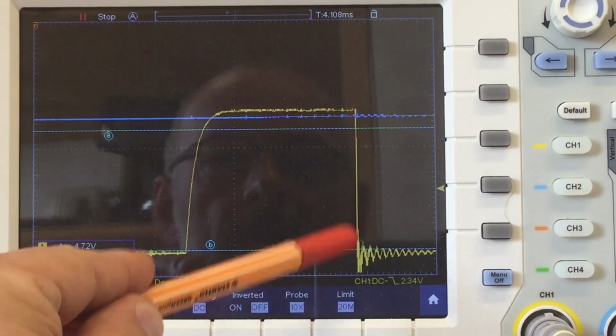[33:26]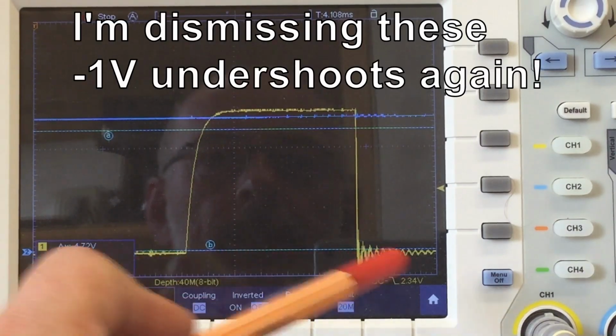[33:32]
My probes are back in the controller here at the pull-up resistor and here at the power rail. So that's measured directly across the pull-up resistor. The signal, of course, on the one side of the resistor and power supply on the other. And if we zoom in there, the power rail is in the crosstalk region, completely okay. And on this side it's just 1 volt on the data line crosstalk. And if I look at one of the really sharp short pulses in the signal, we still have that ringing here when we go down to low.
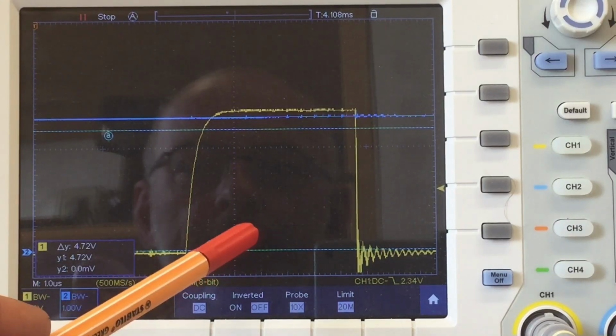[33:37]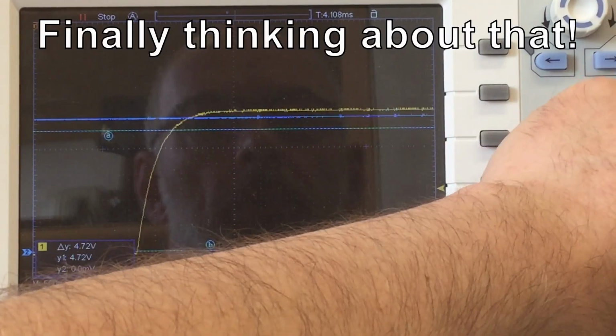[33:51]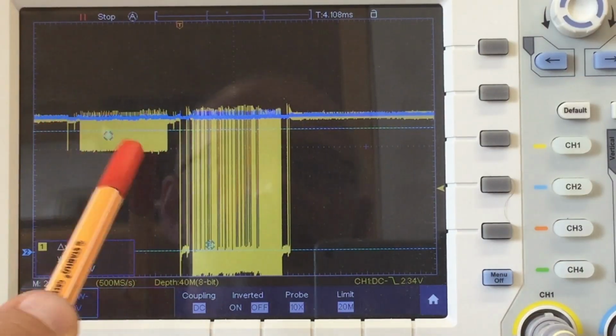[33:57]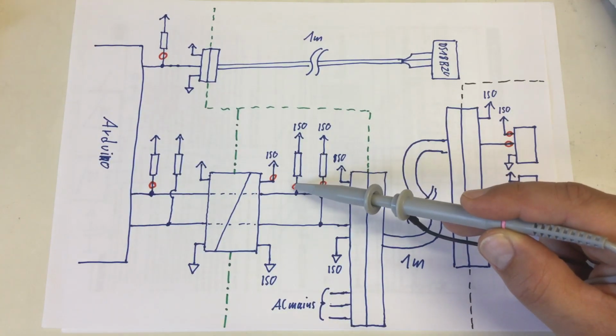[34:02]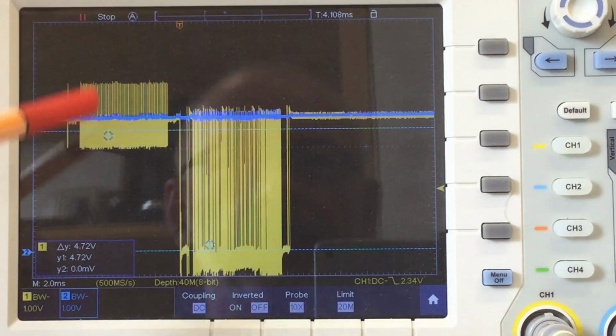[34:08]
Let me try to put in, as I mentioned before, a very small capacitor between the data line and ground, and let's see if we can get rid of that ringing here, and foremost get rid of that crosstalk. I mean, this just looks ugly. Didn't move the probes, still here at the pull-up resistor and the power rail. Now that we don't have to zoom in to see that makes things just worse.
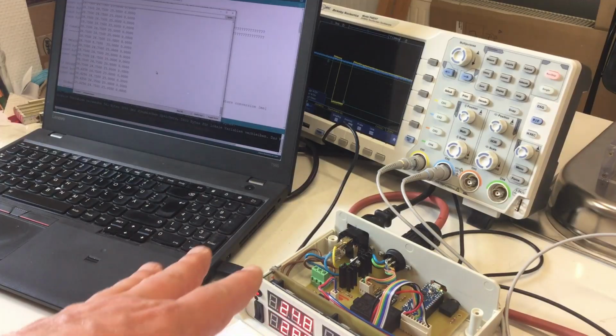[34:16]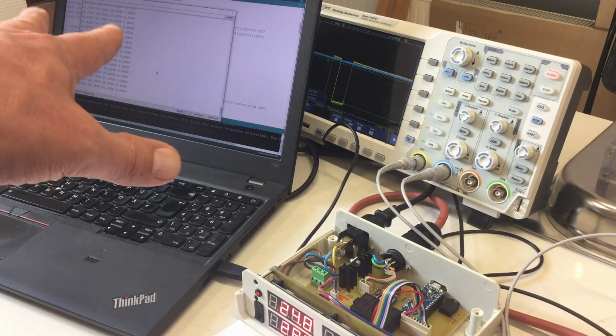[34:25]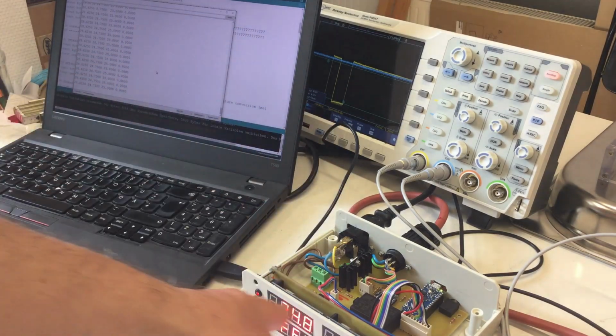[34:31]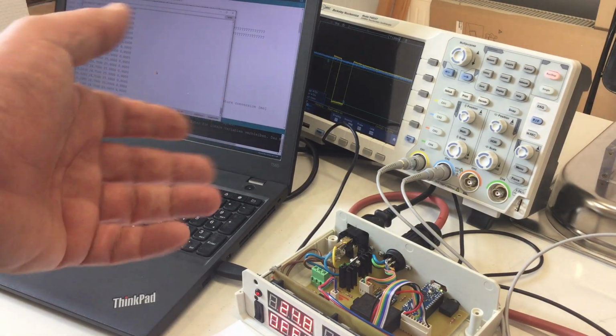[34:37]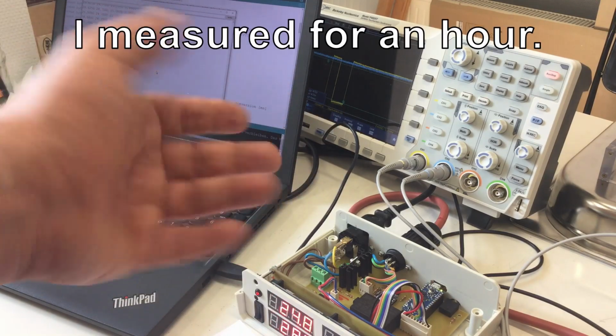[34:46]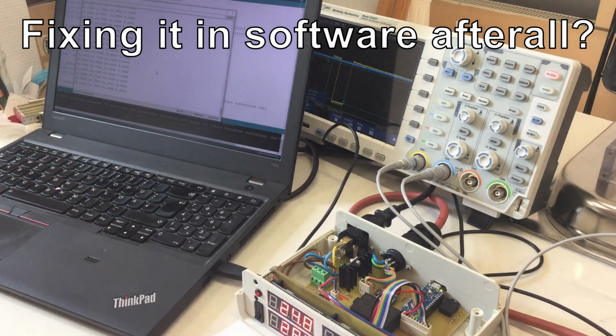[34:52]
If I have connected everything right. I admit I'm at a total loss here, so I decided to let the serial monitor on my notebook, connected via the USB port of course, monitor the values I'm reading on all 3 sensors, and I will do a little statistic seeing how often that intermittent error occurs within about half an hour. And from there I will decide how to proceed. Attention, probes are now back at the DS18B20, signal and power.
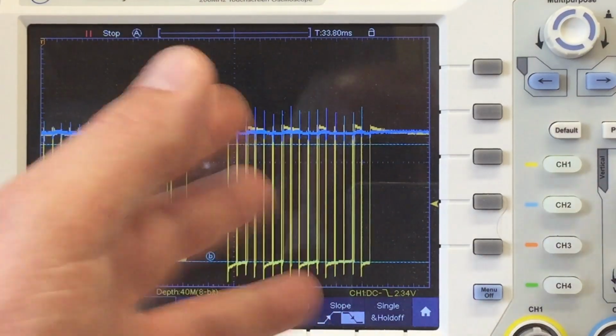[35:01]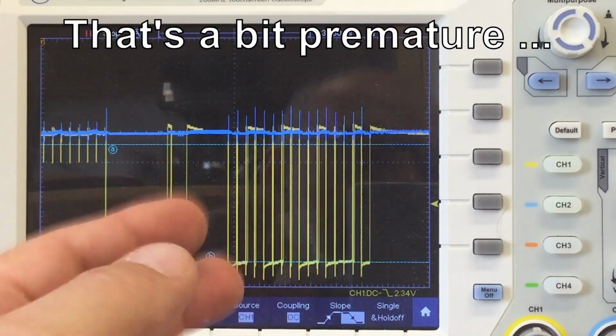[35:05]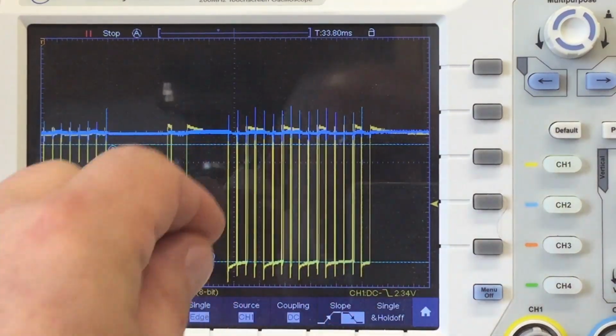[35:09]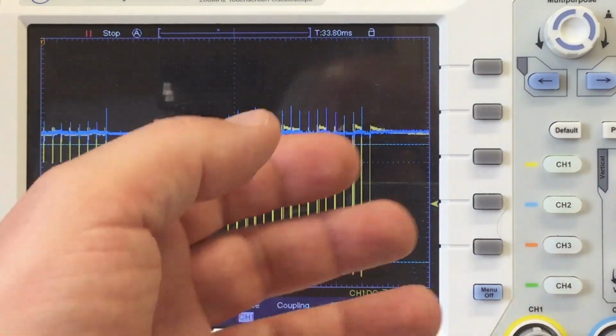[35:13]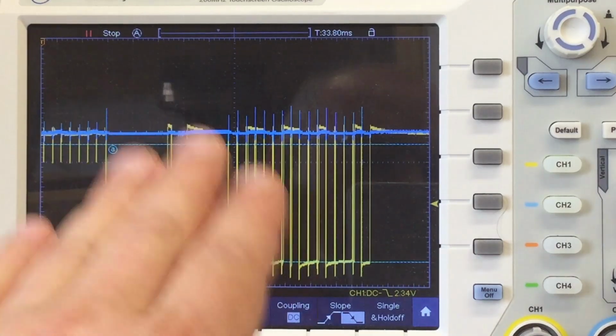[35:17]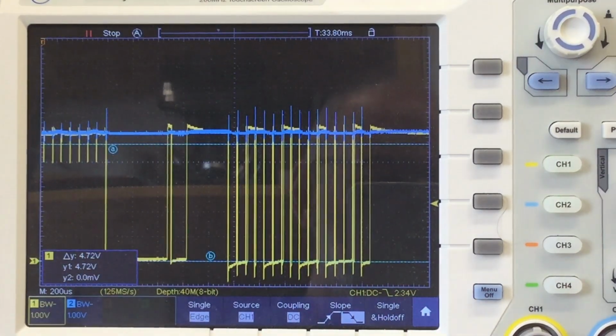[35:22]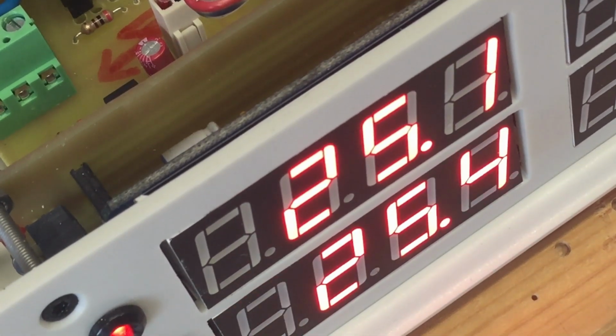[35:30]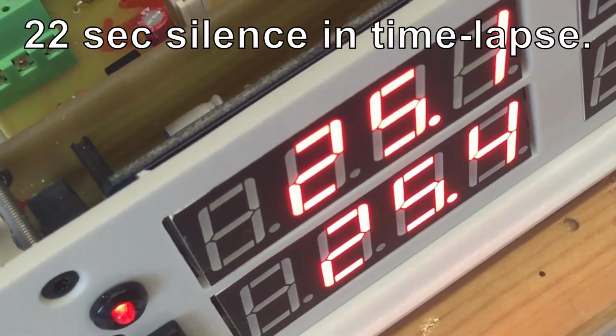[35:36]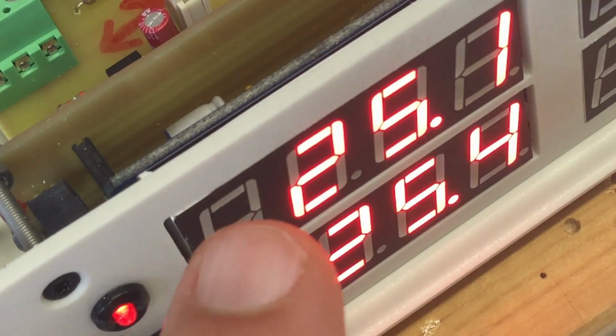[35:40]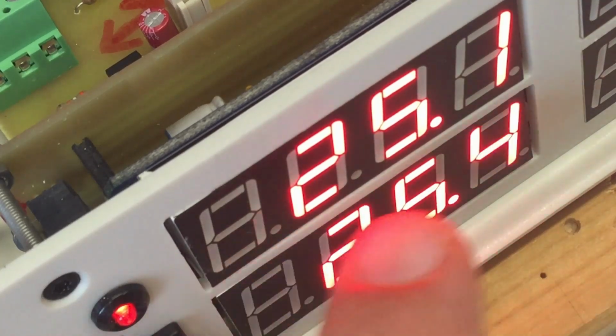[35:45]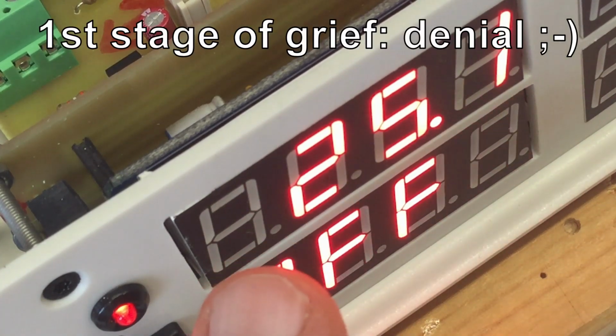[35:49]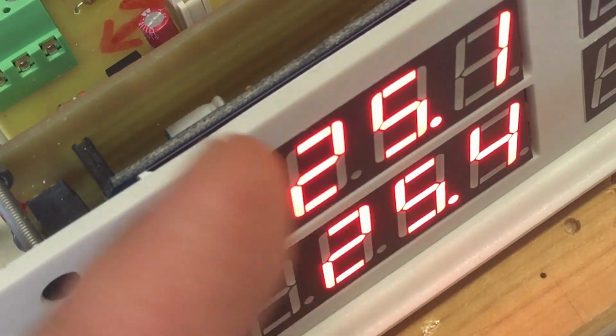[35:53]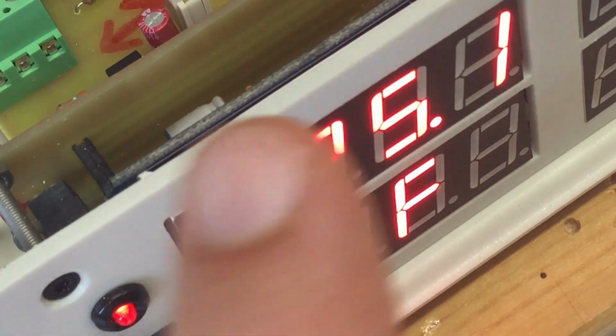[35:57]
I did it! I did it! No more glitches! Well, I couldn't believe it at first, but it worked. It worked, and the solution is so obscure. Give me a sec. Anyway, I'm staring now quite a while on my display here, and I see a glitch. Well, but that was the first glitch I saw in a very, very long while. Was that really a glitch or just a trick of the eye? I don't know. Anyway, now I'm uncertain.
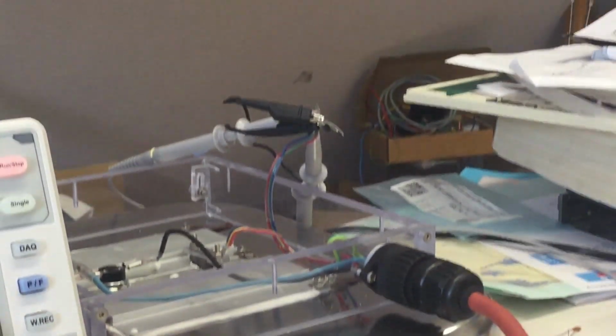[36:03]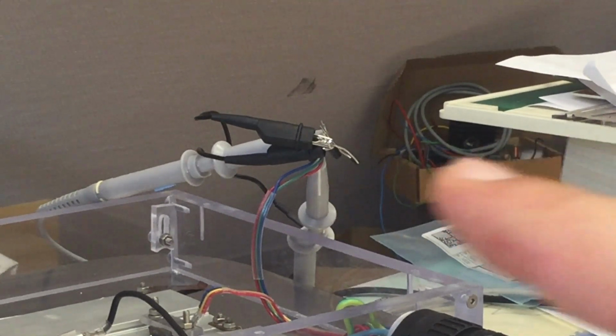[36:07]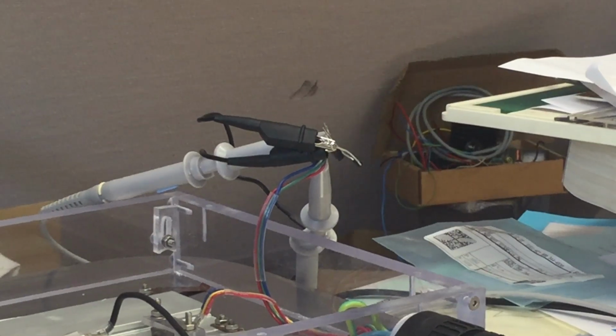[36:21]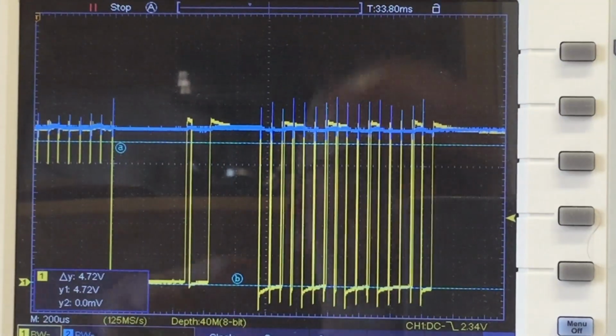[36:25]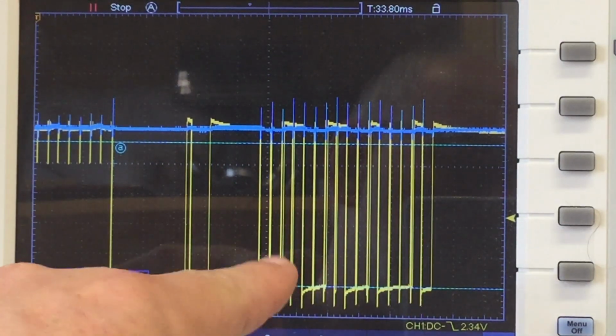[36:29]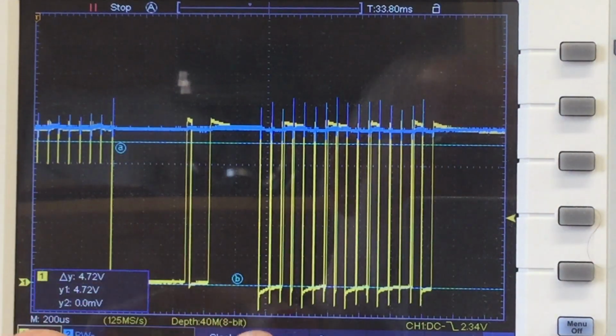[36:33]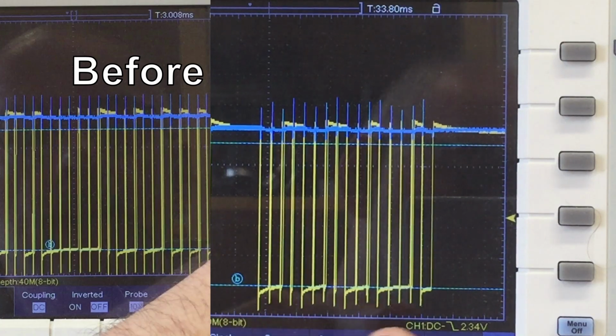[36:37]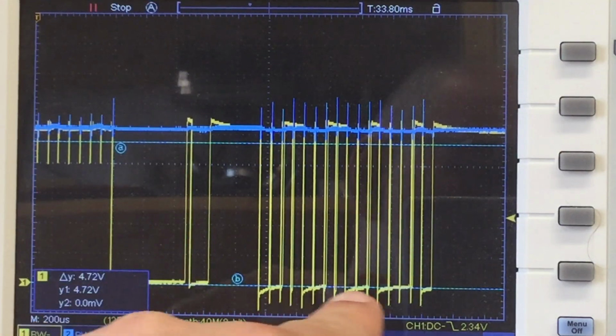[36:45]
Anyway, what I did was to add, you see that little blob there? That's a Schottky diode in reverse polarity between the signal line and the ground. And what it does is to cut off these undershoots here on the falling edge. You remember these undershoots were touching the -1 volt line, probably they extended below that, and that Schottky diode is now capping them off.
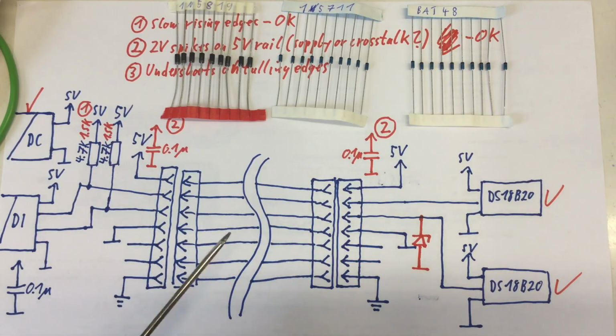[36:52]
Anyway, while I was waiting that half hour and recording the measured values via USB port, I surfed a little bit more. I mean, I Googled before a problem with glitches on one-wire bus, but then I came upon a very obscure link. And I found a second link that linked to the first one, and both referenced a Maxim document which no longer exists.
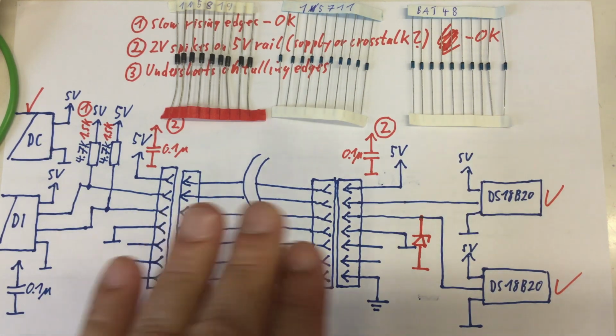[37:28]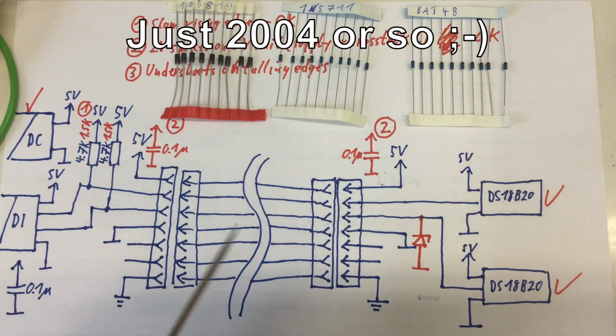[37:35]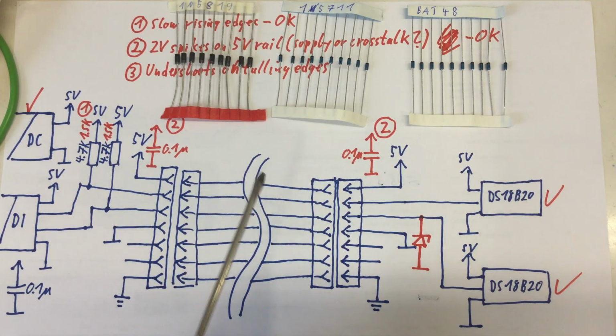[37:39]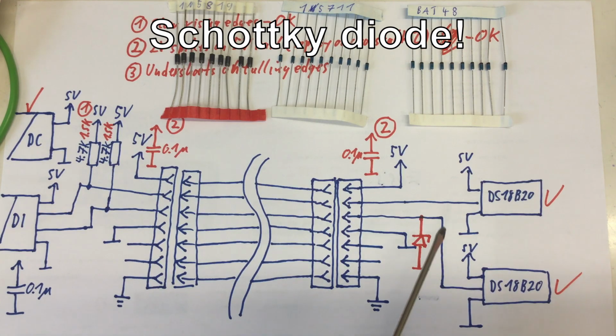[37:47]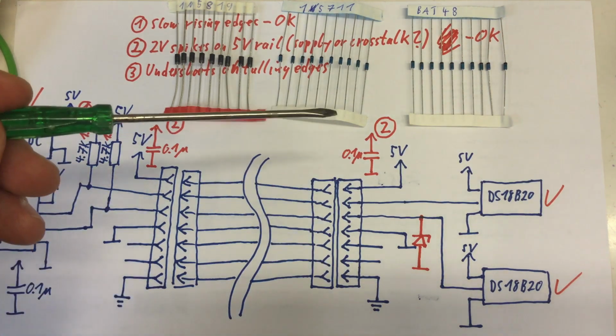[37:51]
I had to go into the Wayback Machine on the internet, back to the, I don't know, 90s or something, to find that document, and it described a technique where you put a reverse biased diode on the signal line of your one-wire devices to cap off these undershoots on the falling edges of the signal. And I didn't know that, but obviously these things are quite sensitive to such undershoots because their internal parasitic power
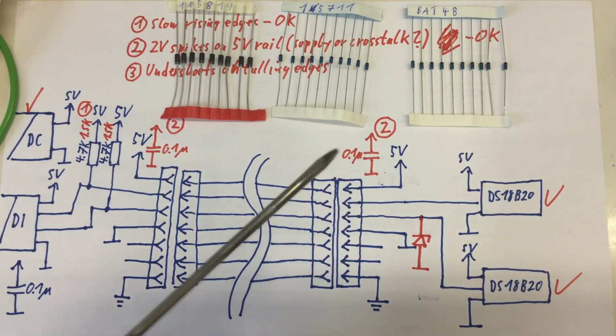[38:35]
circuits, they have some diodes in them, 2 to ground and 2 to 5 volts, and if the signal line goes below 0.7 volts, that can do funny things to them. At least that's how I understood
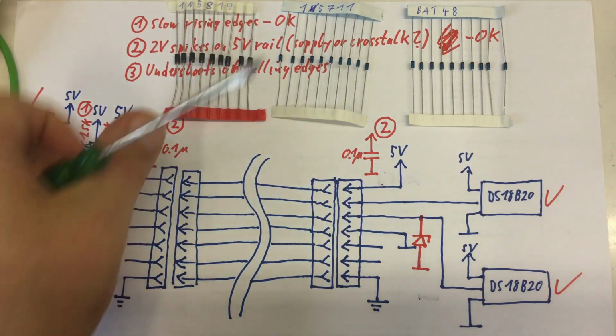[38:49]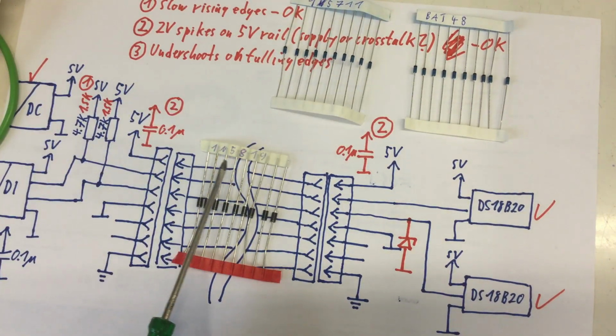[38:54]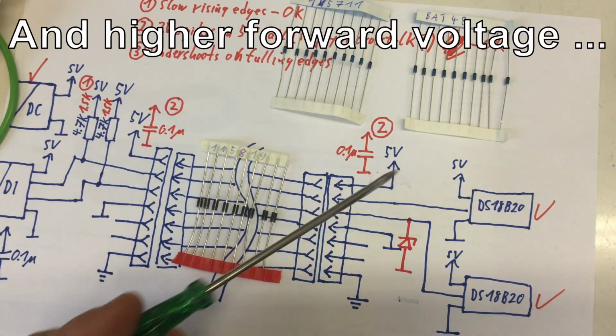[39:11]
And they recommended Schottky diodes, 1N5817. I couldn't get them here in my hometown, so I took 1N5819, which is basically the same Schottky diode but with a higher voltage rating, and that's what's currently there on my sensor on the data line and ground.
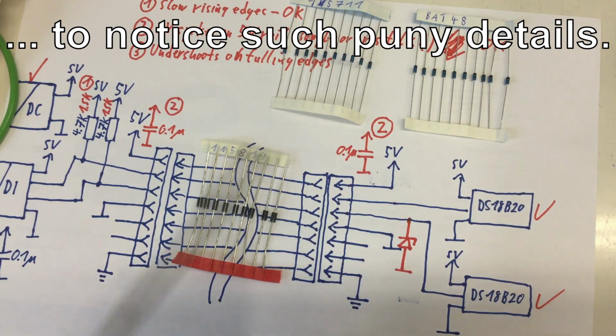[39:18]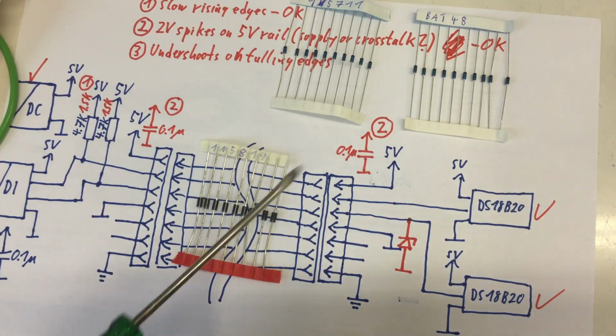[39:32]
But maybe some 20 years later or even longer, we can do even better, because I have here 2 other Schottky diodes. I don't know which is which. I went shopping and bought a lot of Schottky diodes, obviously. This one should have an even smaller voltage drop on small currents. And this one, or the other way around, I think this one is a high frequency one for a radio frequency application, which should be able to react even faster to these sharp spikes.
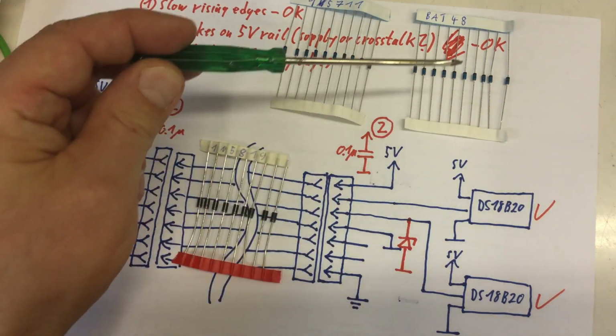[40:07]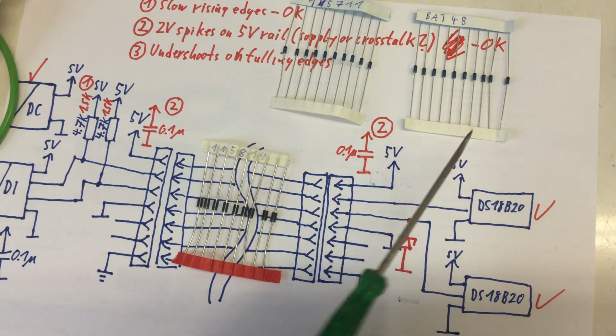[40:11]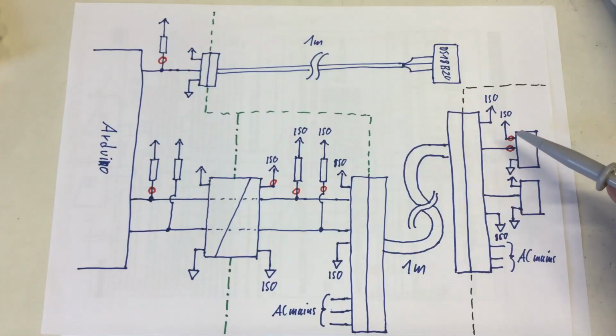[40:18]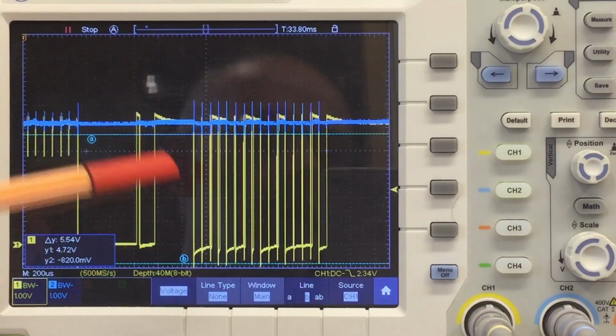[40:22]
And that one has, compared to the 1N5819, a lower voltage drop at very, very small currents. So let's try if I can do even a little bit better. Probes are still connected directly to the DS18B20. So that's my signal with a BAT48, which should have at small currents a smaller voltage drop, but is obviously not as fast, or not fast enough, because you see the spikes, the negative spikes are longer again. And I placed the cursor at the longest spike I observed with the 1N5819. Now let's see what a radio frequency Schottky diode can do.
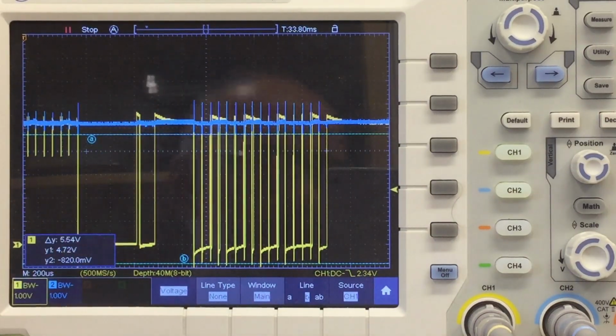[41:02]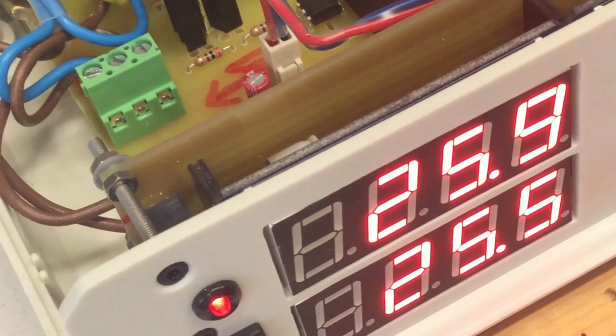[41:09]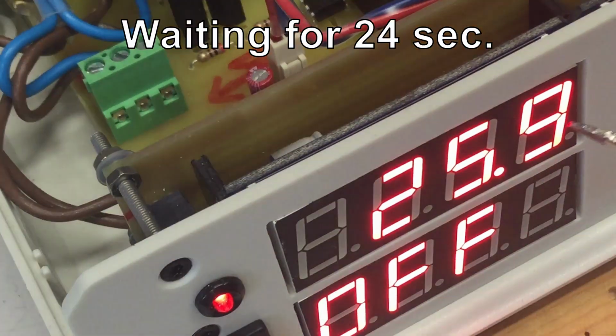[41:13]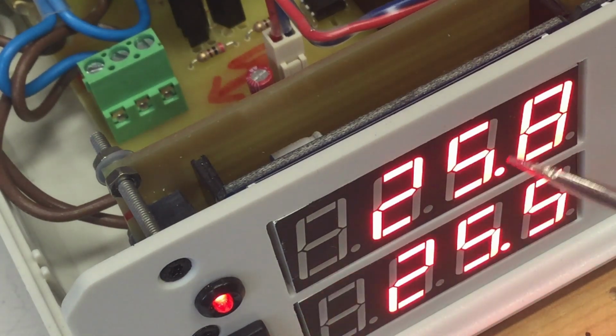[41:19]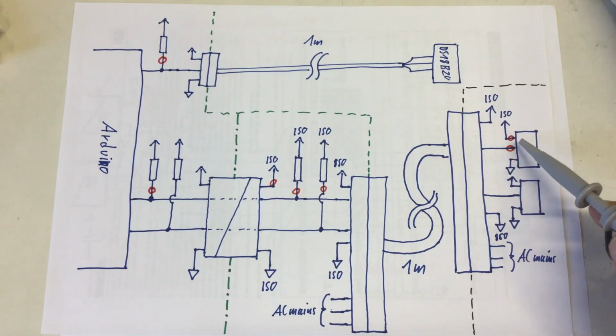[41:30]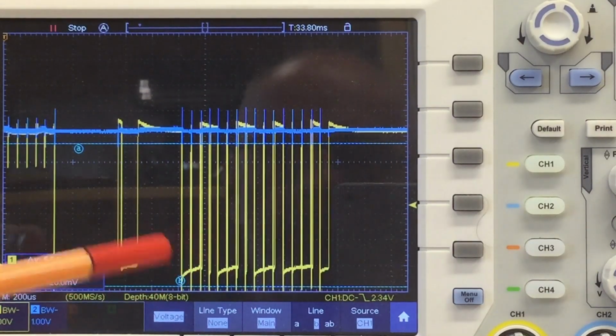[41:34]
And yes, the glitches are back. If you don't believe me, we just have to wait a second or so. There, glitch. Okay, we had to wait 5 seconds or so, but yeah, it's glitching. It's noticeably glitching. Haven't moved the probes, still here at the sensor. Nope, the BAT48 radio frequency Schottky diode does an even worse job. So you see almost all spikes are touching the -1 volt line again, and maybe are even going beyond it.
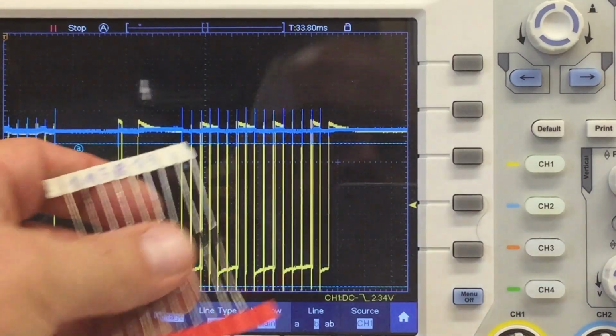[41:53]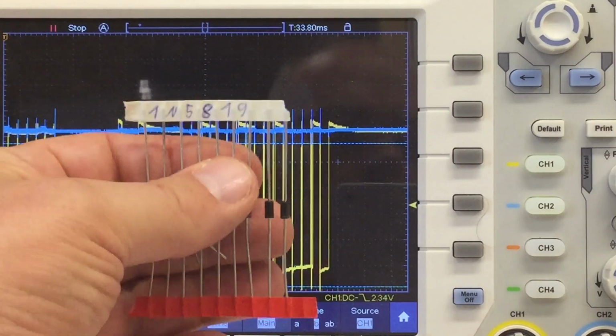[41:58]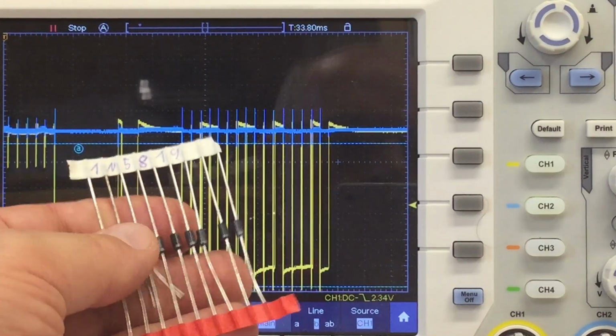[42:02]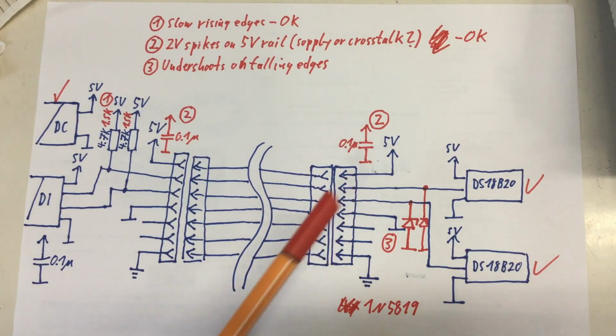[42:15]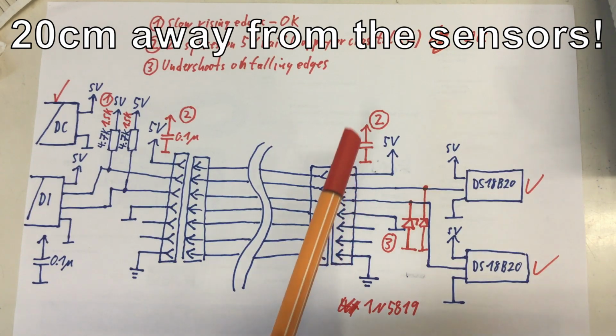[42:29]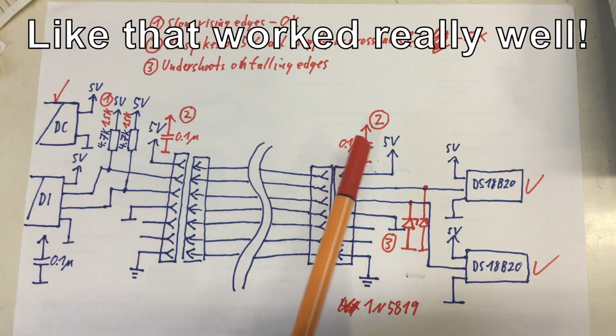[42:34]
So yeah, the advised, what was it? 1N5817, and I have a 19 here. They are marketed as rectifiers for switching power supplies. So they are obviously designed to take sharp, fast spikes. So I will permanently botch in some of these Schottky diodes here, reverse biased to the ground on the data lines. Yeah, I probably solder them in at the connector like I did with the 0.1 microfarad capacitors here for the 5 volt supply line.
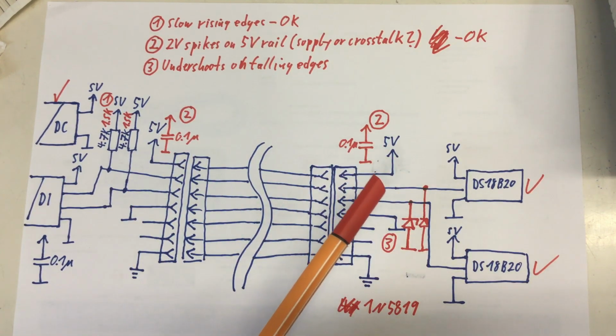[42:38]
And then we have a measurement again, and then I will do a statistic again, let the thing run for half an hour and record the values, and then go to my Excel and see how many glitches I still have. Okay, I botched in the 2 diodes, the Schottkys here from ground to one signal line, and yeah, they're down below the other one from ground to signal line, and yeah, here's my 0.1 microfarad filter capacitor or decoupling capacitor on the power rail.
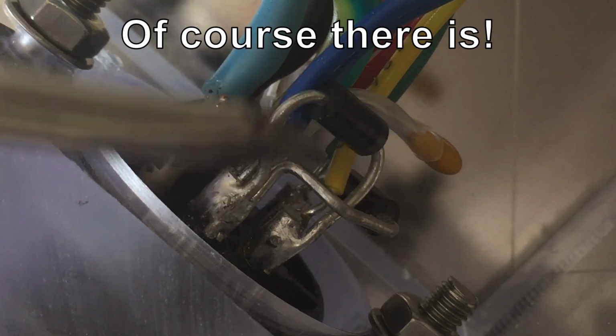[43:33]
And yeah, I didn't put my heart into it because, after studying the data sheets a little bit more in detail, I learned there is a significant difference between the 1N5819 and the 1N5817, and it's not only the rated voltage, it's also the forward voltage drop, which is significantly, 100 millivolts or so, lower for the 1N5817. But I don't have 17s, I only have 19s now. At some point I might replace them or find a better solution.
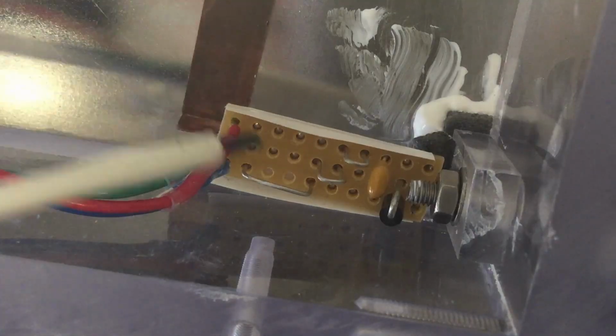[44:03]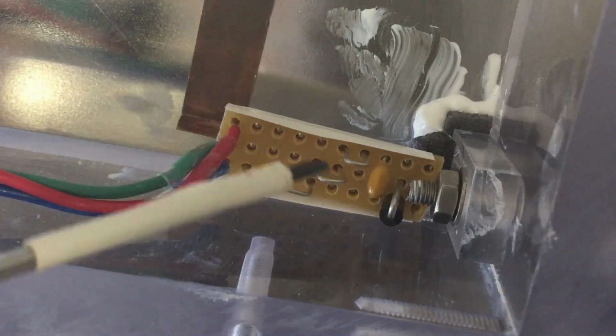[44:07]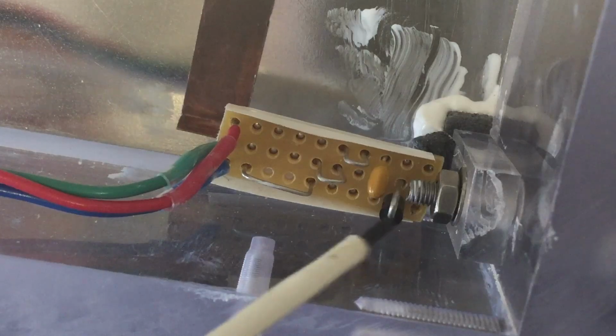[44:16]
Anyway, let's connect everything up and have a look at the oscilloscope. That didn't work out so well signal-wise when I probed it with the scope, and I spare you the view at the scope accompanied by my inappropriate language. So I created some little perf boards here carrying the Schottky diode, the decoupling capacitor, and a few wires for test points for attaching the oscilloscope
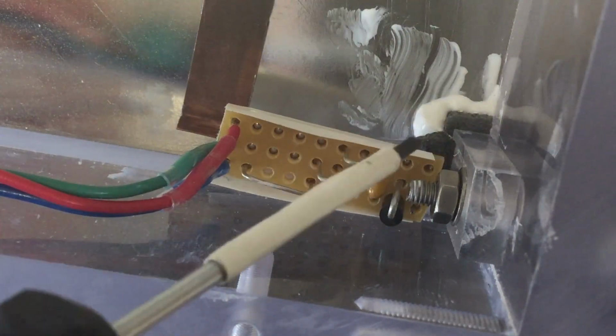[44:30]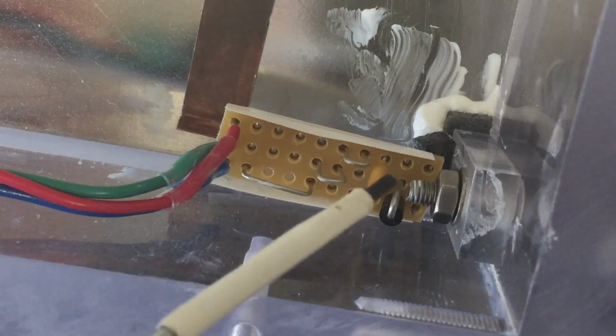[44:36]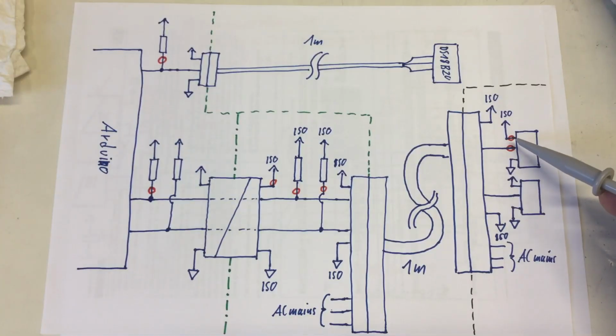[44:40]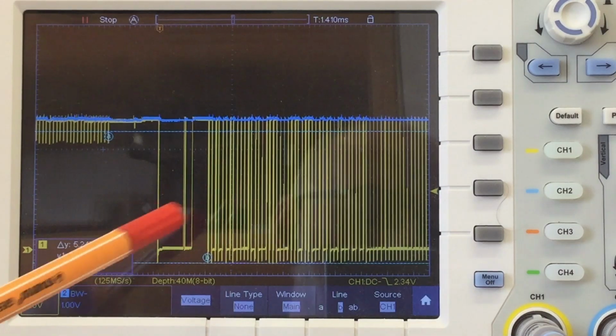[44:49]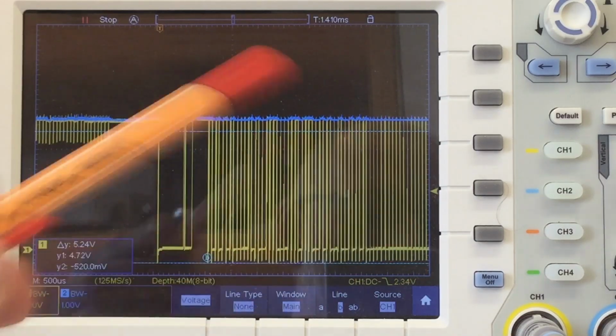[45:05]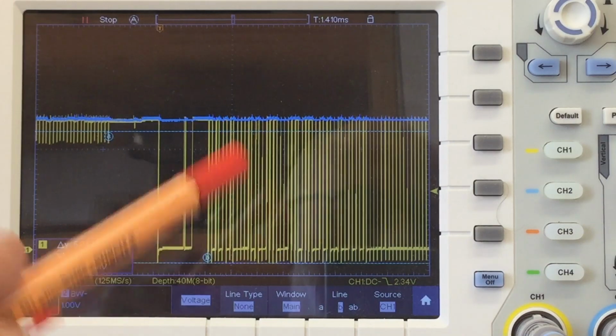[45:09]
properly. And please also note the excess amount of thermal goo down here where the sensor is pressed to the bath. Let's see how this works. Probes are still here at the DS18B20, now hooked to my newfangled professional test point. And it works beautifully. So my spikes down here are now all limited to minus 520 millivolts. That's within specification in that very old document. Yeah, not 1990 something, but it is from 2000, or it was available until 2004 in the Wayback Machine.
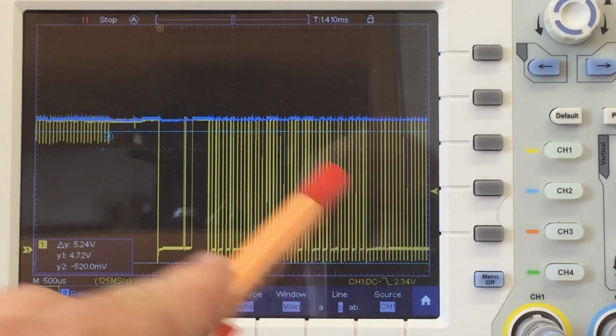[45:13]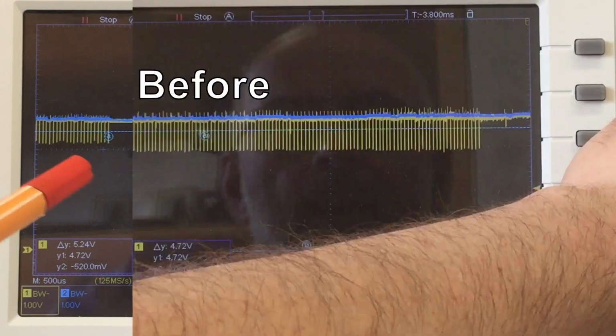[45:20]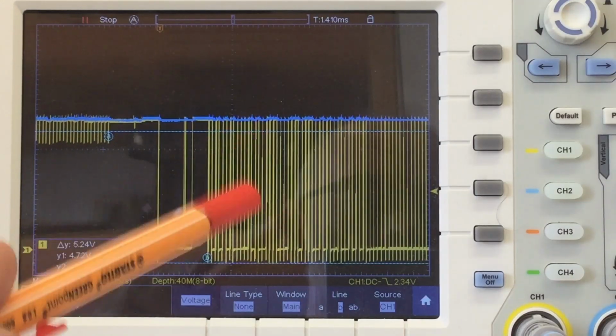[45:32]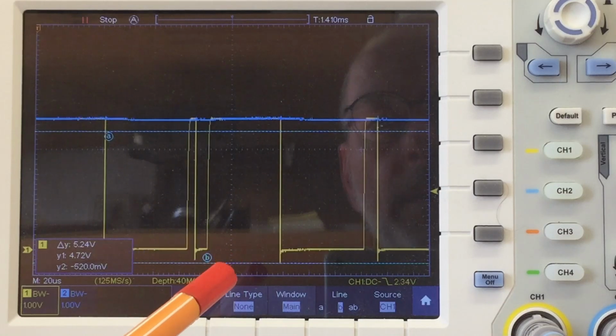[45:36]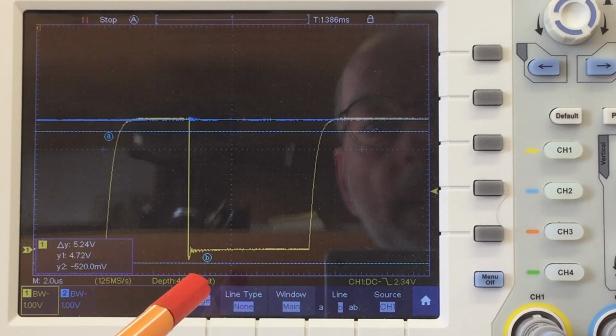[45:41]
Yeah, and I also think, but I would have to make a comparison when I cut the video together, that the crosstalk is also a little bit lower, so maybe 1 volt, 1.1 volts or something like that. Let's have a look at the edges of very small pulses. Yeah, there we have one. Yeah, still more than satisfying.
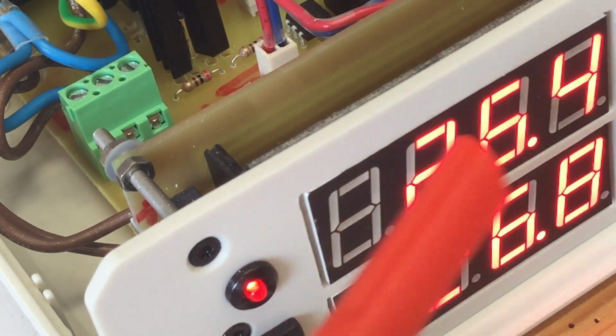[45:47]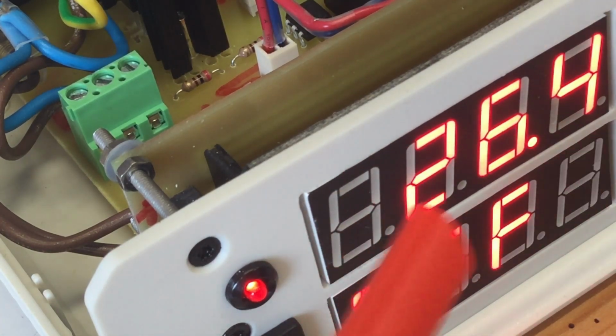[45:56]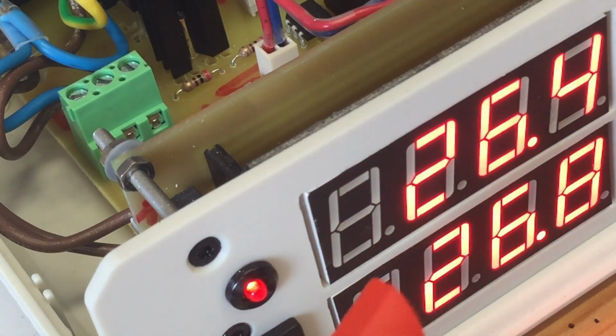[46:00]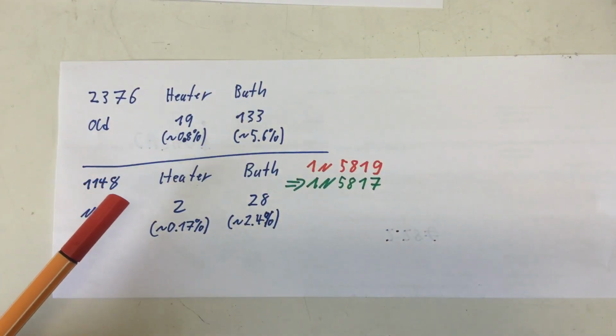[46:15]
I haven't noticed any erroneous temperatures displayed here for a while now, but just to be on the safe side, I will connect my notebook with USB and record the temperatures for half an hour, put it in Excel and see if I can find some errors within, let's say, 2,000, 3,000 measurements. And the results are in.
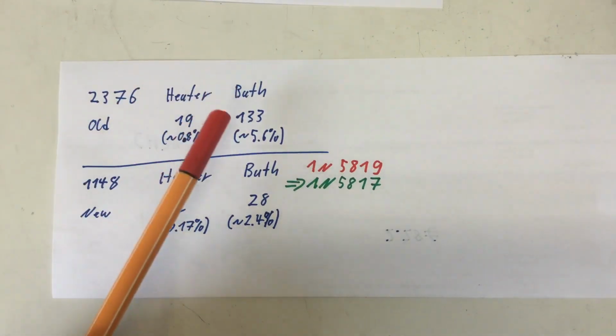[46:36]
These numbers here, that was the 1 hour measurement I did without the Schottky diodes. So a total of 2,376 measurements. And I had 19 erroneous readings on the heater sensor, so about 0.8%. On the bath sensor, that was the upper display, where you could watch the errors appear, 133, that's a whopping 5.6%. So more than every 20th reading was wrong.
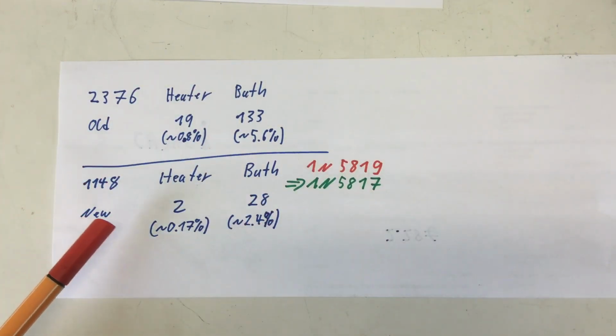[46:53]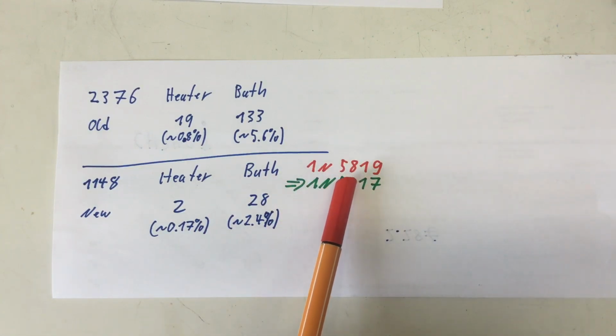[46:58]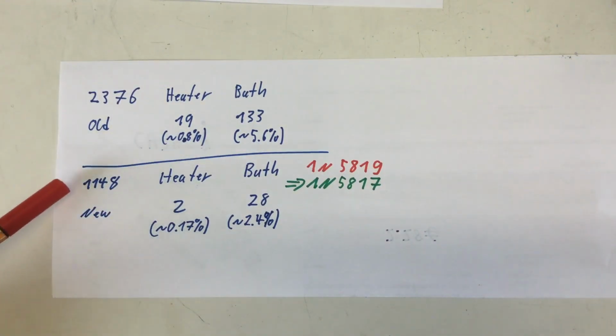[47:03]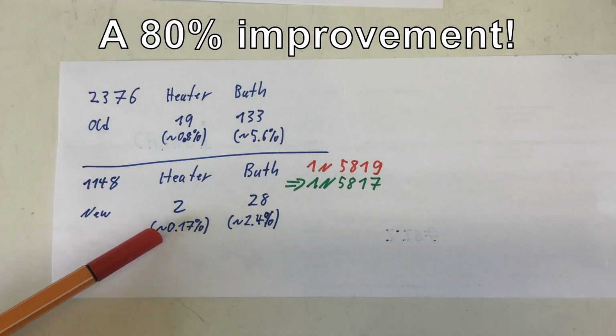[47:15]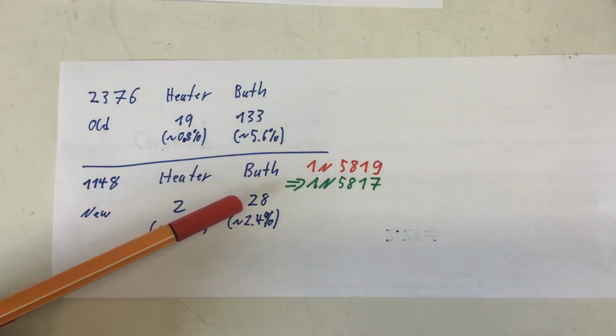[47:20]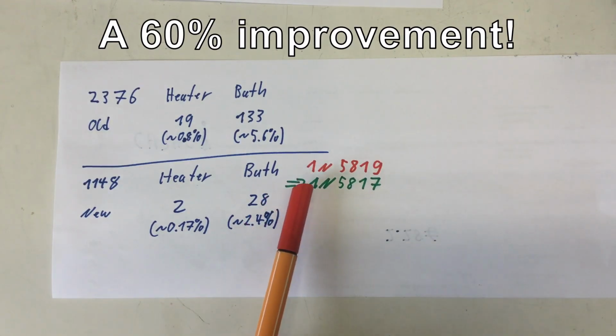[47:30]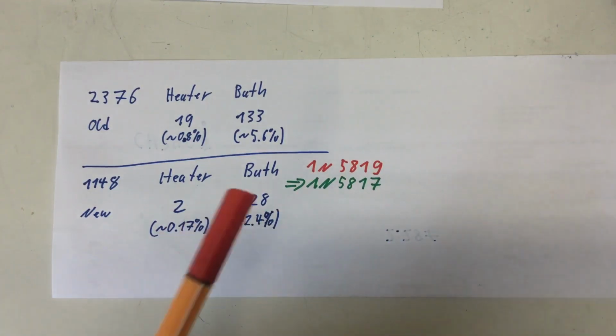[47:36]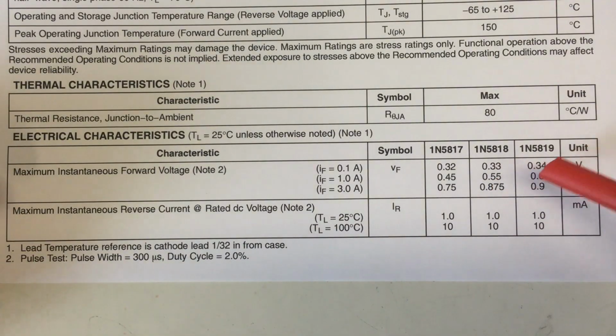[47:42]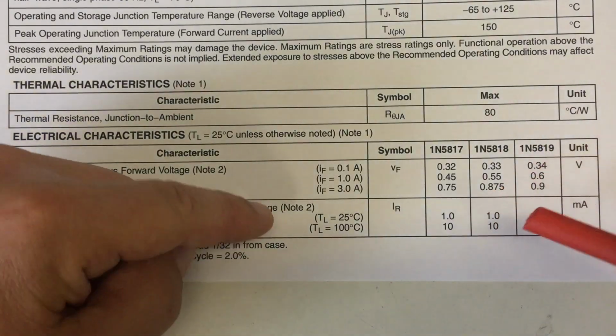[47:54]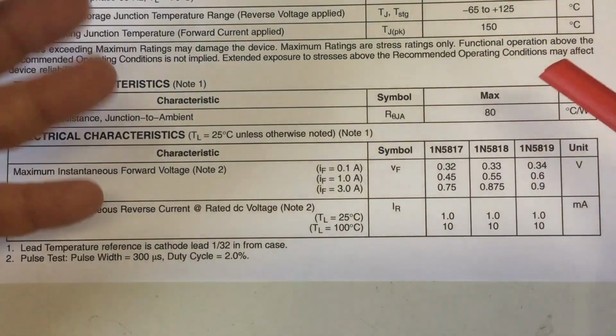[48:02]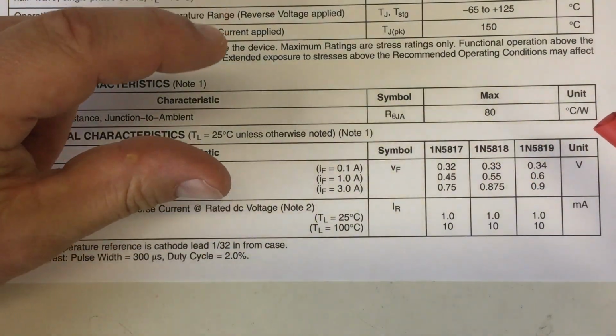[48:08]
And remember, I'm using the wrong Schottky diode. The Schottky diode recommended by Maxim is the 1N5817. The important thing here is that the 1N5817 has significantly smaller forward voltages than the 1N5819. The smaller the current, the smaller that difference gets. So for 0.1 amps, it's a meager 20 millivolts. The 1N5817 also has much smaller semiconductor layers.
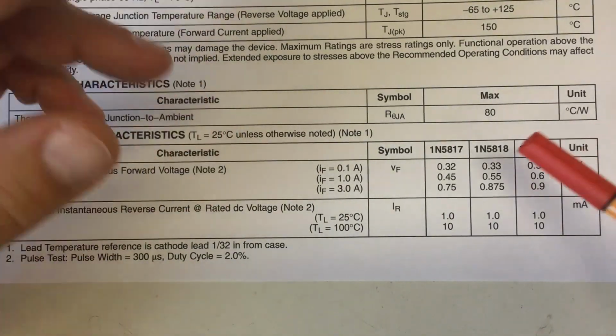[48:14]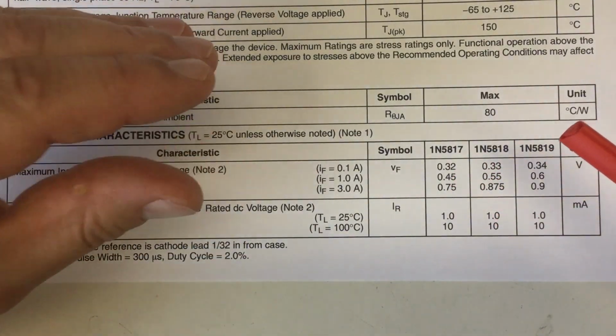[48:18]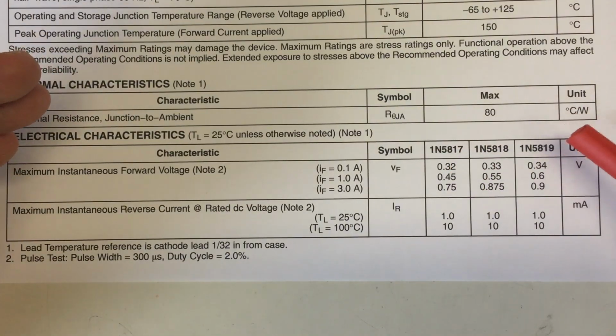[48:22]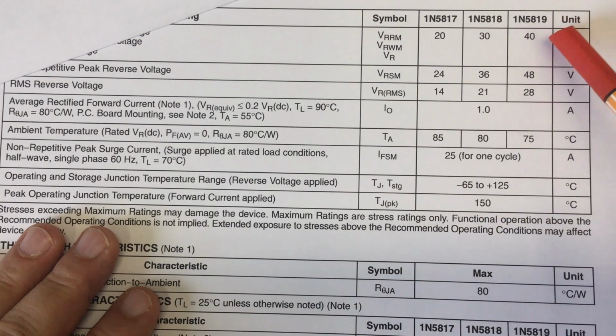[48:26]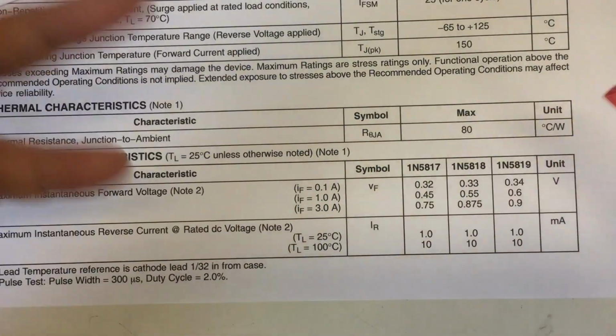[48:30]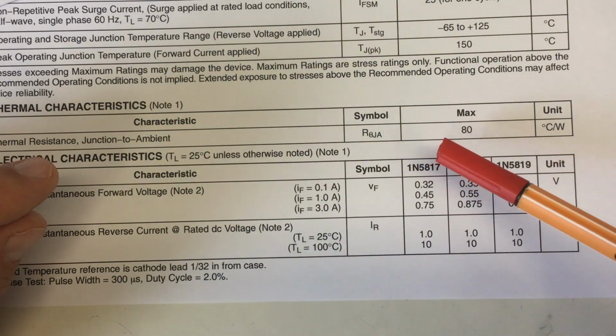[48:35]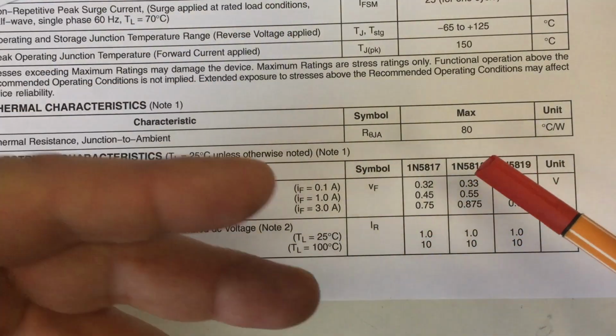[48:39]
There's also probably less capacitance in the diode. And yeah, it's faster. It's still a wee bit faster than the 1N5819, which is designed for 40 volts instead of 20 volts. So I guess as soon as the 1N5817s arrive and I can put them in, things will improve even more.
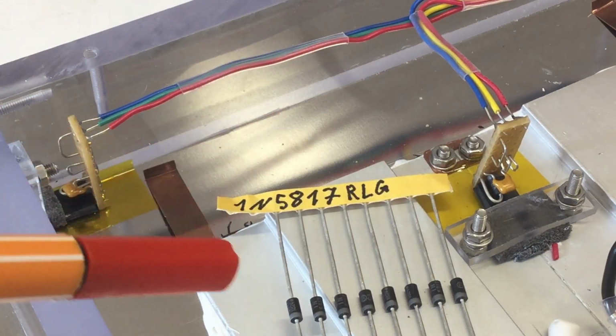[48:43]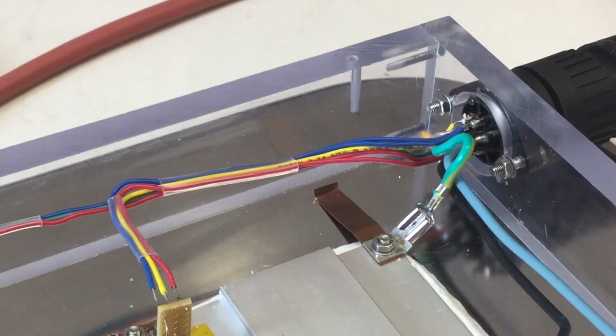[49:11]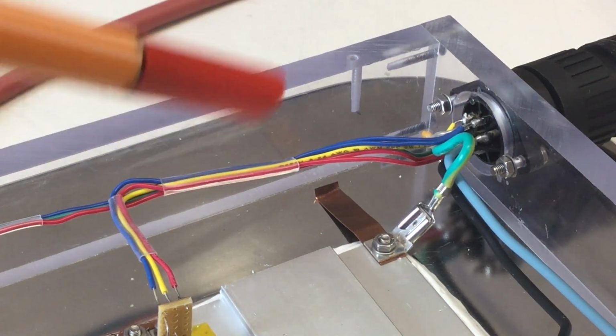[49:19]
It's a few days later and I received my 1N5817 Schottky diodes, and I soldered them in and redid these perf boards here holding the decoupling capacitor, the Schottky diode, and my test points. Looks a little bit neater, and at the same time I shortened the leads to the temperature sensors and these back to the big connector as much as I could. So let's connect the oscilloscope and have a look at the signals now.
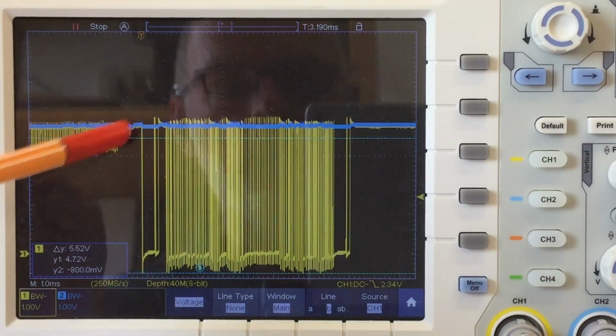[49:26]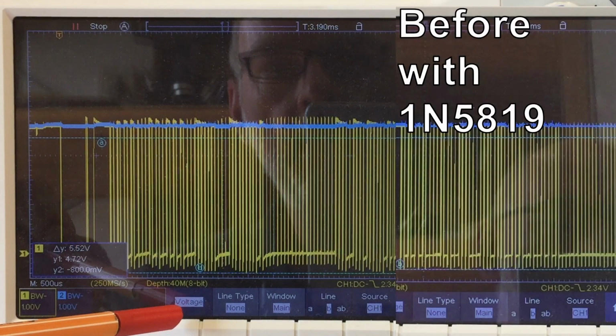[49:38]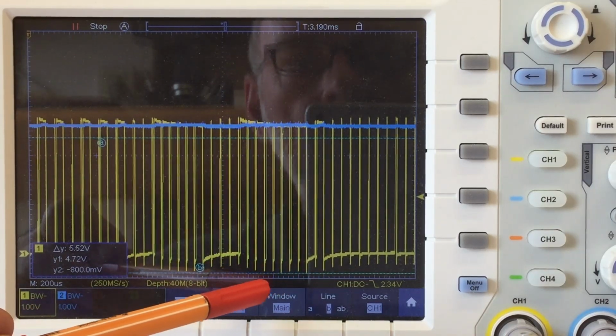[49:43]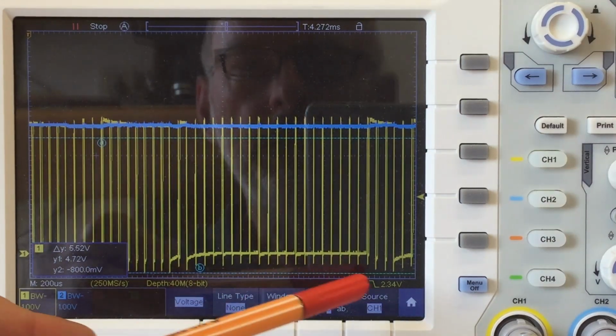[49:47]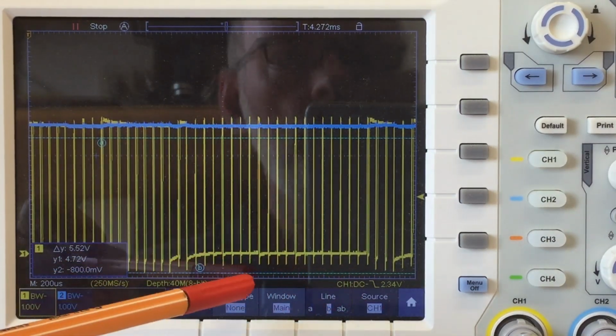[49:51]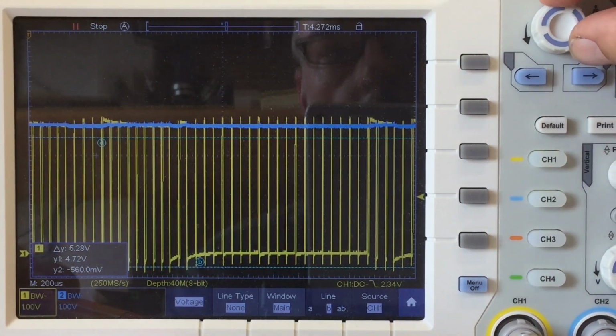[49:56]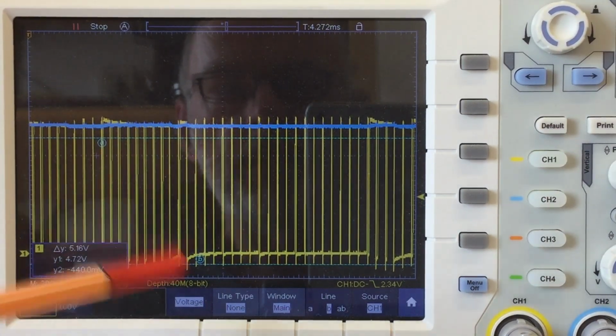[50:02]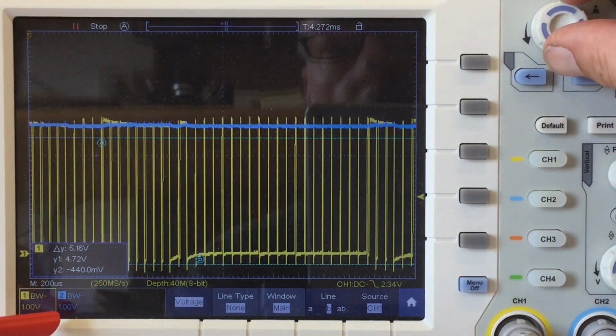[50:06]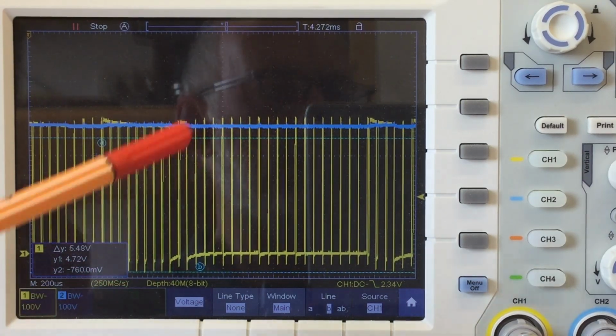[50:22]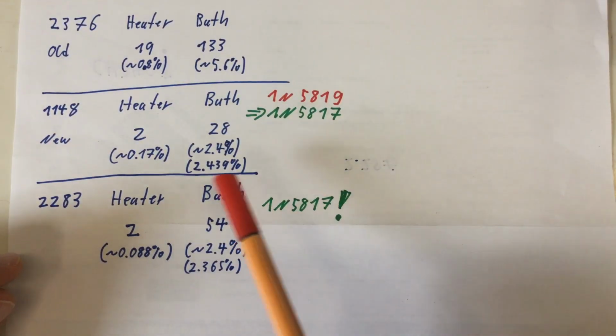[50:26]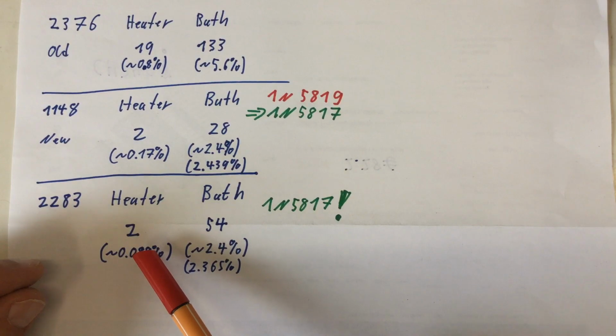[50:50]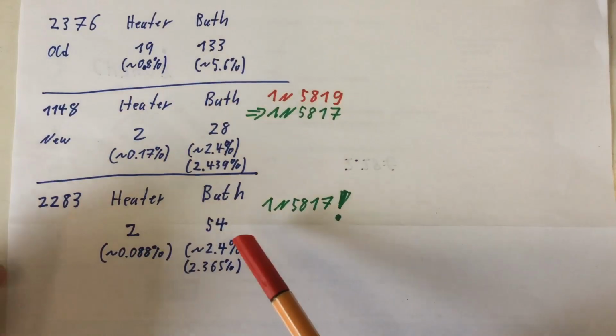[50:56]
Well, the numbers are in and it's a little bit disappointing. I have more samples this time, again 2,283. I observed 2 false readings on the heater sensor. That brings us down from 0.17% to 0.088%, but that's not really statistically significant. The same for the bath sensor. We are up in count to 54 errors in these 2,000-something samples, which equates to about 2.4%.
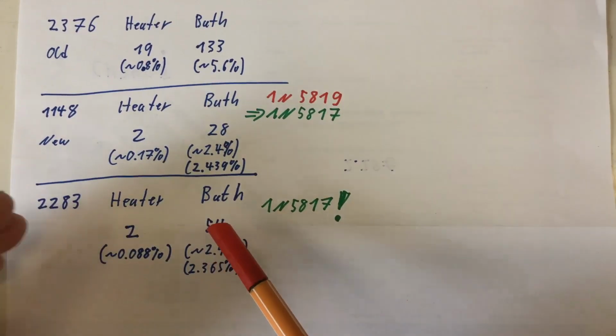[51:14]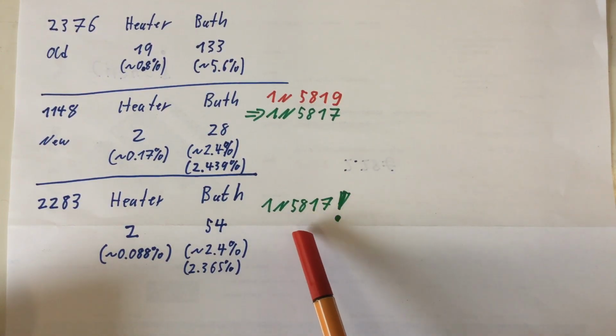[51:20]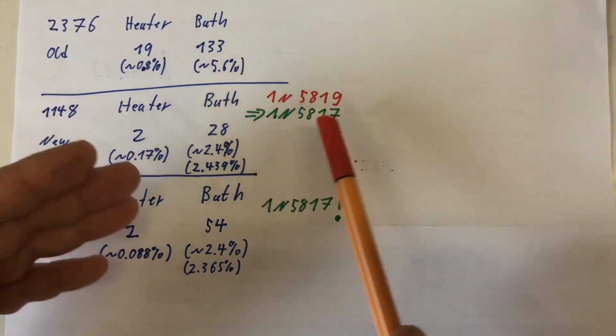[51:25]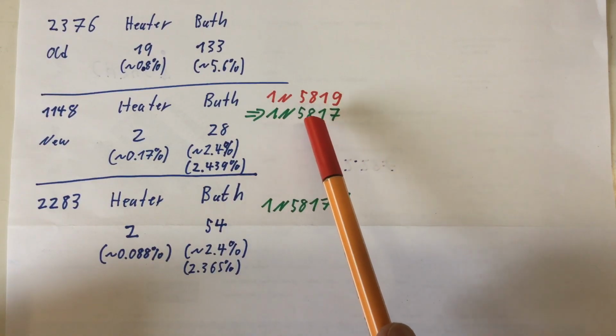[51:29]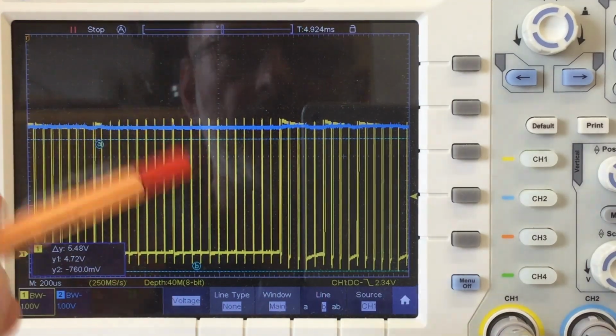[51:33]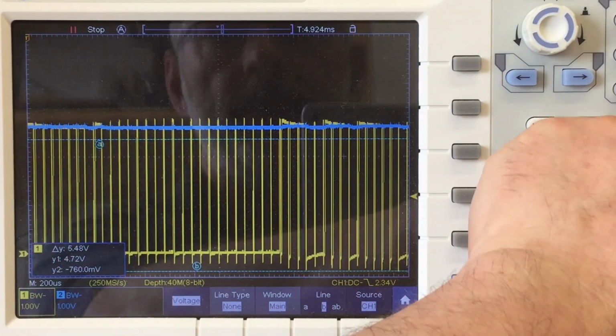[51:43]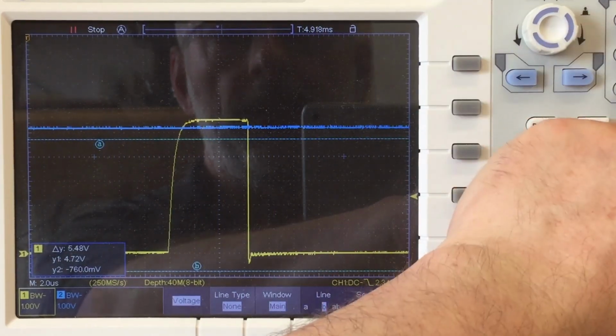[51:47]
And if we take more decimals on the percentage number, we see a very slight improvement, but also not statistically significant. And we're using now the prescribed 1N5817 instead of the similar but not absolutely equal 1N5819. There's one last thing I want to try. I mean, we changed the pull-up resistors from 4.7K to 1.5K to get our rising edges really nice.
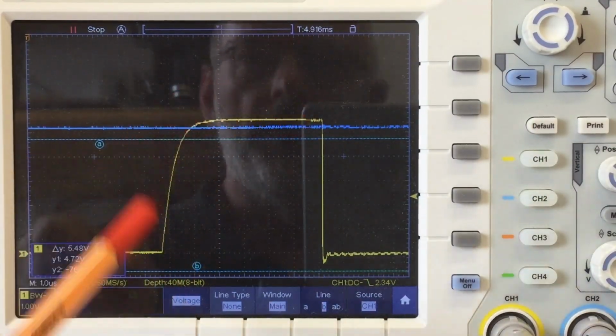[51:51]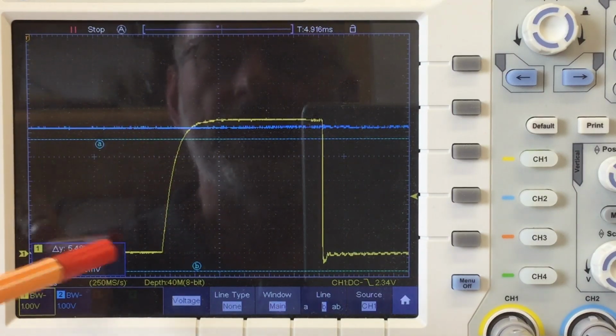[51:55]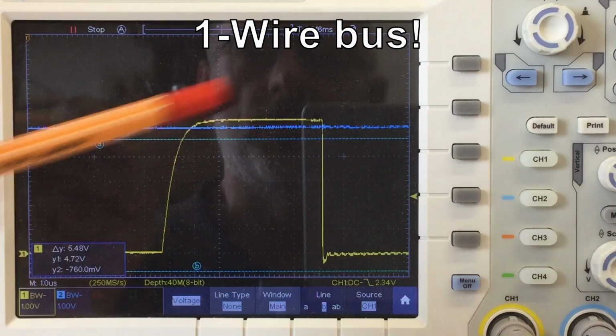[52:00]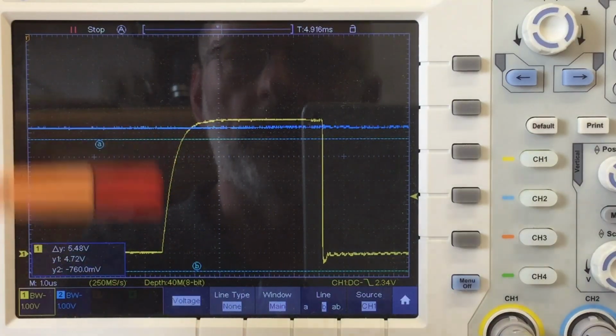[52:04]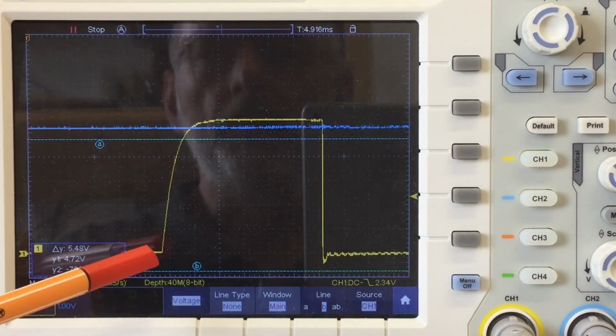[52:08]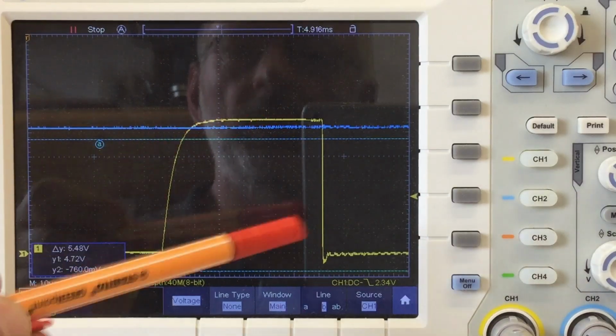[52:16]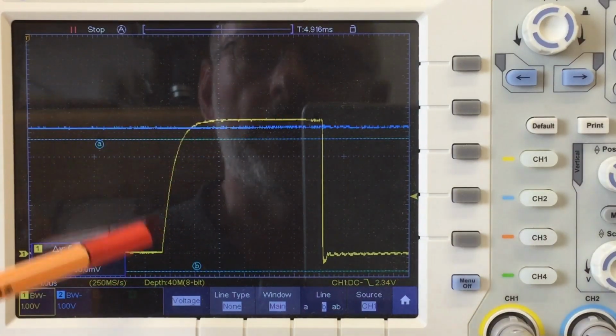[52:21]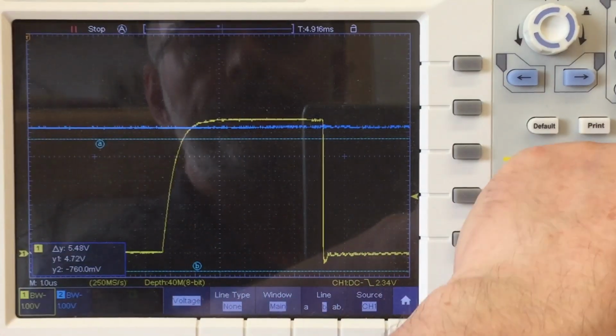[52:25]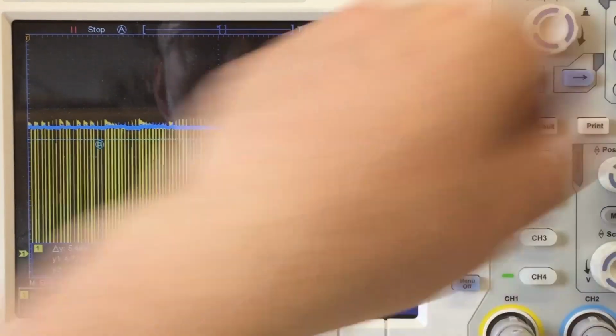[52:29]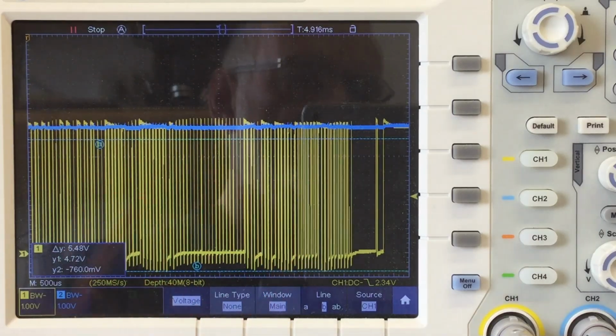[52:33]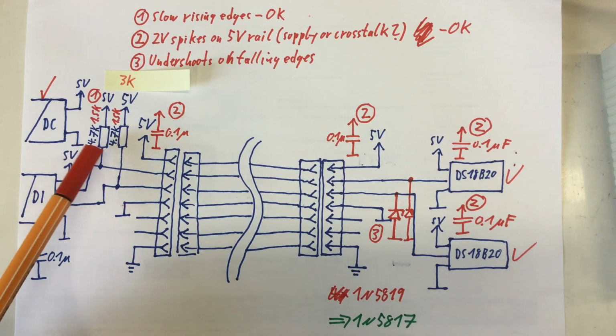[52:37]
And they are, but they don't really have to be that nice on an I2C bus. The rising edges on an I2C bus, with pull-up resistors and open collector pull-downs, are always a little bit slow. So maybe when we increase the value of the pull-up resistors again, just a little, not to 4.7K again, because that didn't work, obviously, we can limit the undershoots a little bit more. I changed the pull-up resistors here after the digital isolator from 1.5K to, I'm using Post-it now, 3K. Initially we were at 4.7K, so that's somewhere in the middle.
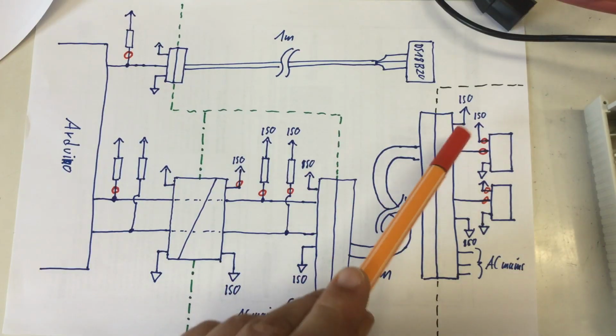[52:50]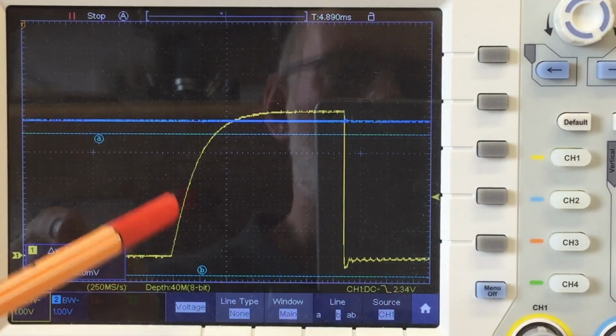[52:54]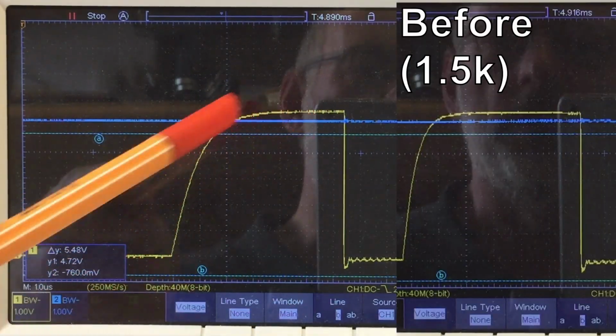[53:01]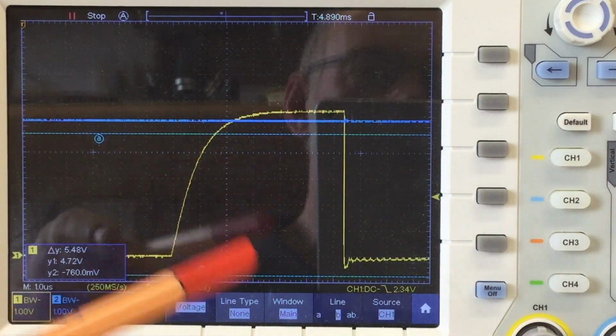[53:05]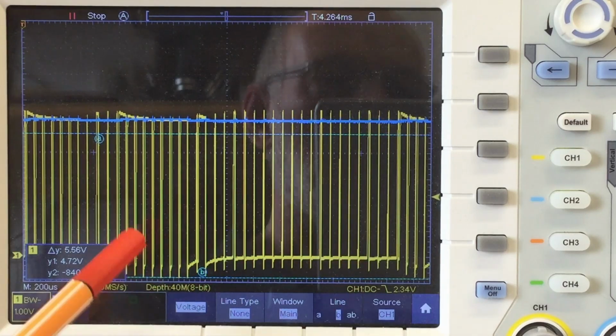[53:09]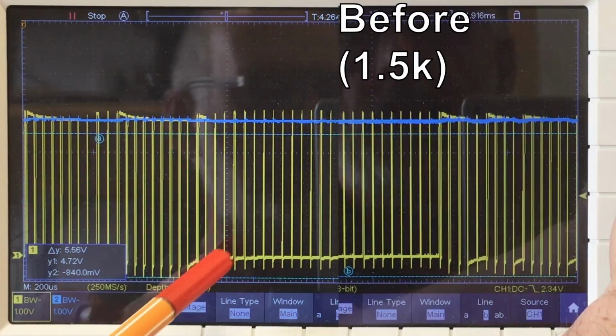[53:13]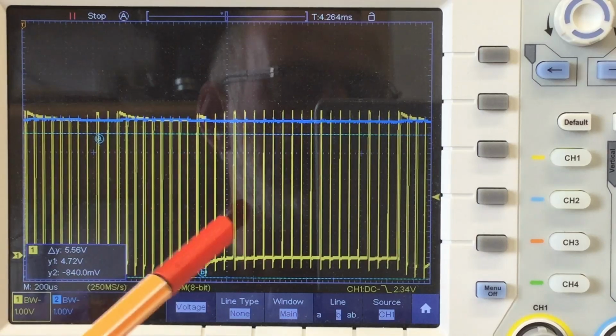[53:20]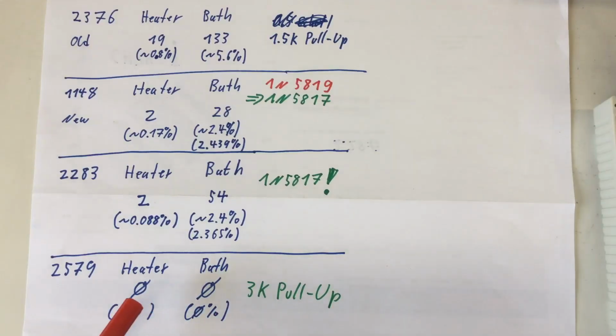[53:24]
And my probes are still connected directly here at the temperature sensor. My rising edges at very short pulses are still, okay, borderline, but acceptable. At least on the oscilloscope there is no noticeable change in the undershoots. So the only thing left for me to do is run the thing for half an hour again and do a statistic. And we finally did it! Zilch wrong temperature readings on the heater sensor and zilch wrong temperature readings on the bath sensor.
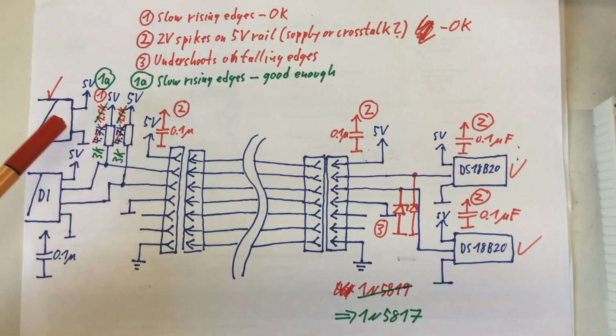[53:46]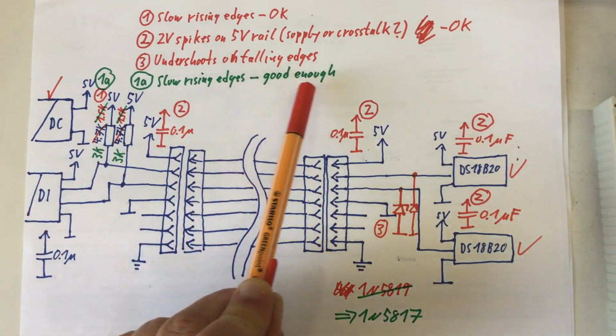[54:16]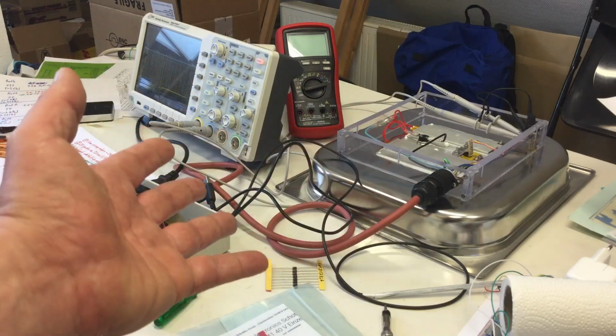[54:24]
So increasing the pull-ups again to 3K solved our problem. We went in the very beginning with our pull-up resistors from standard 4.7K to a very aggressive 1.5K. That solved some problems. And now we go back to 3K and everything is fine. I called our first step going to 1.5K step 1. I call this 1A. We're still handling the slow rising edges, but we are not that aggressive with the pull-up, so our rising edges are good enough and everything's working. It's finally time to wrap things up.
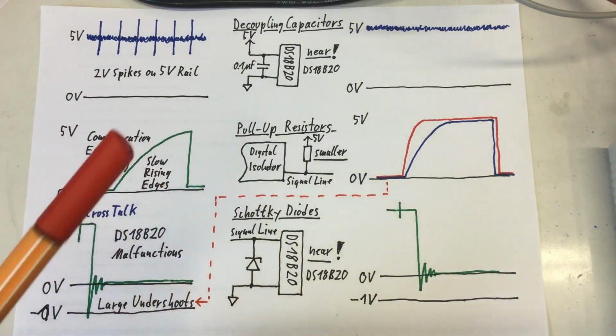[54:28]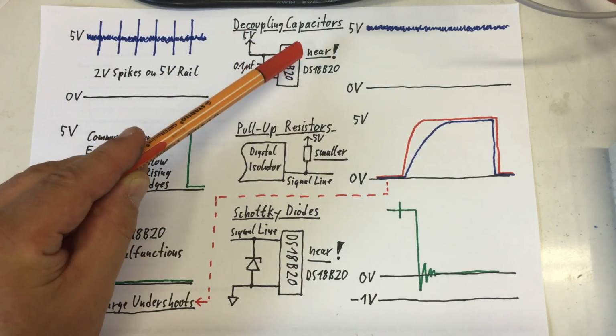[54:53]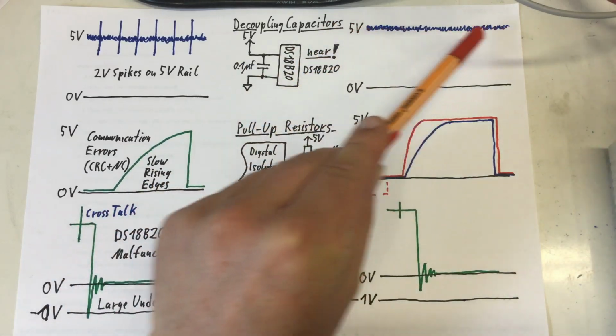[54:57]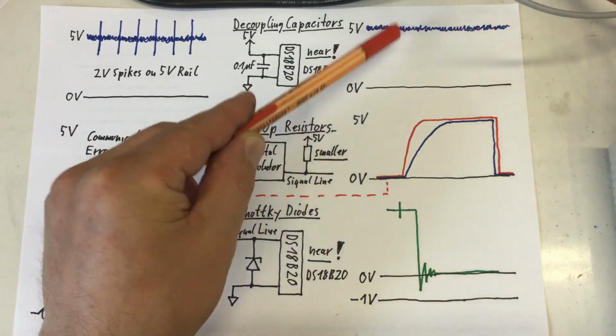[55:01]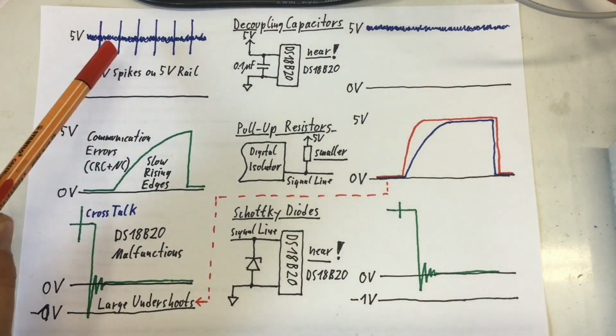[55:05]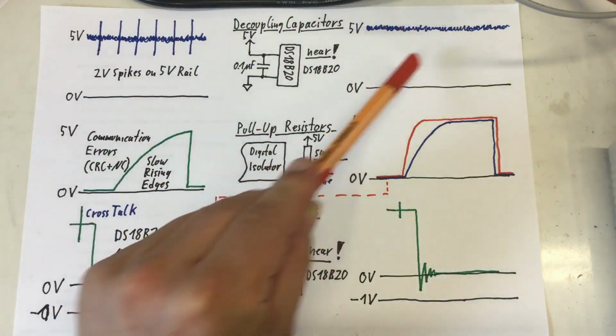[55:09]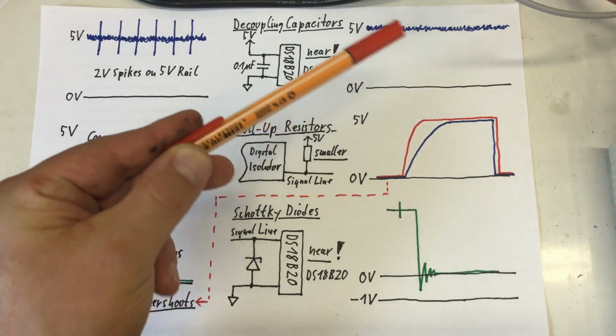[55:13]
So this is all what we did that actually had some effect. I start with the 2-volt spikes on the 5-volt rail we were observing. That was actually crosstalk from the data lines. And we solved that by adding decoupling capacitors between ground and the 5-volt line near the DS18B20, and afterwards some noise, of course, on the 5-volt rail, but otherwise it looked fine. We do not know if that actually solved any issues, but a nice clean power rail is always a good thing.
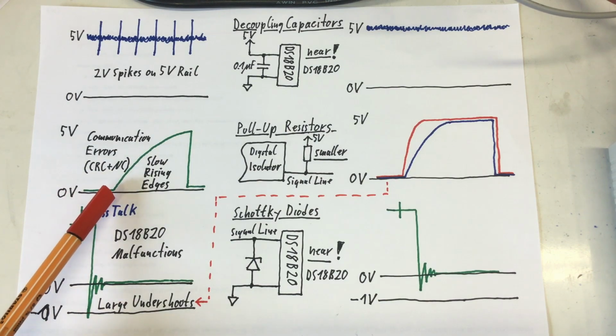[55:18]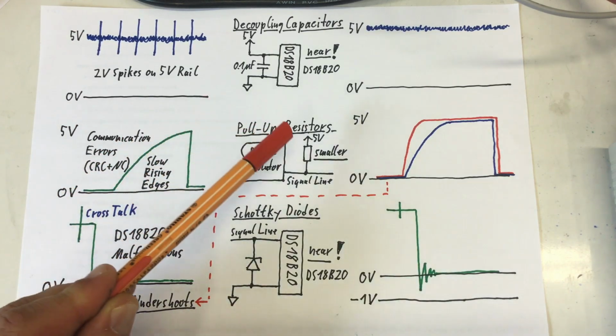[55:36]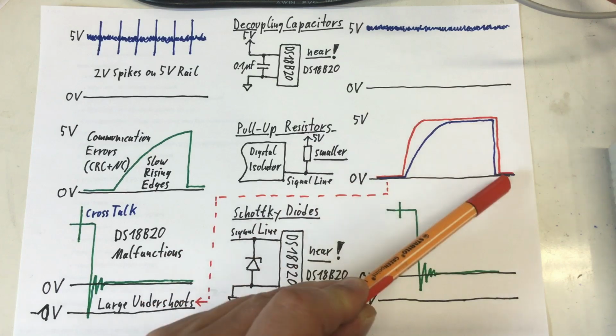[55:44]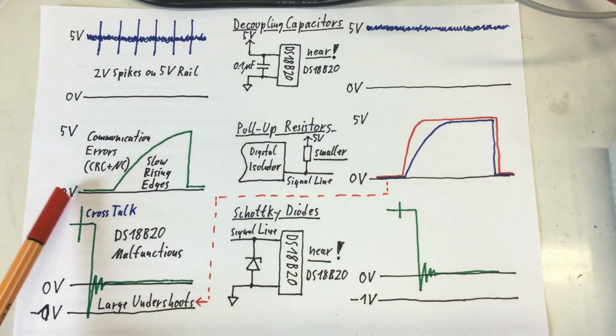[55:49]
Then we observed these really slow rising edges. It looked ugly, and that was, in hindsight, causing communication errors between the Arduino and the DS18B20. So we solved that by aggressively making the pull-up resistors smaller. So we got a really nice signal, here in red, and that took care of communication errors.
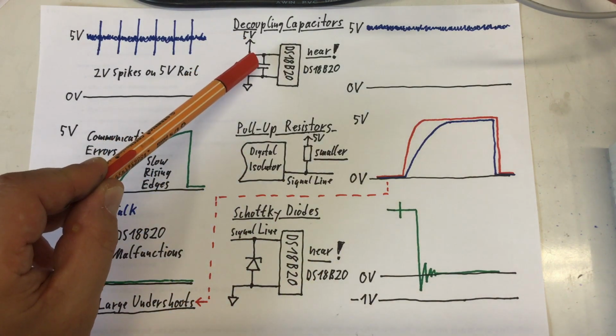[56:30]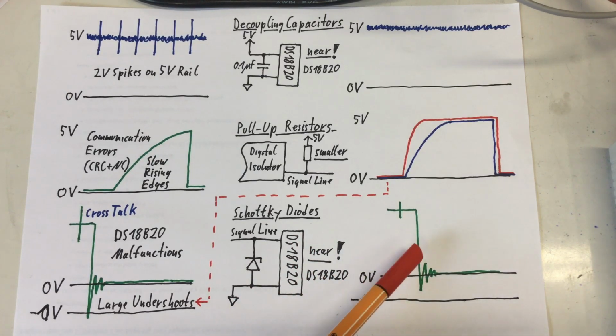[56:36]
Finally, we had this crosstalk on the data lines. I forget about that for a second, but foremost, these large undershoots, which I ignored for quite a while. They went down at least -1 volt, probably further. And these undershoots, as I learned, cause the DS18B20 to malfunction. We suppressed these undershoots by adding reverse-biased Schottky diodes from ground to the signal line, again like the decoupling capacitors near the DS18B20. That took care of most of the undershoots, and remember the crosstalk, also reduced the crosstalk.
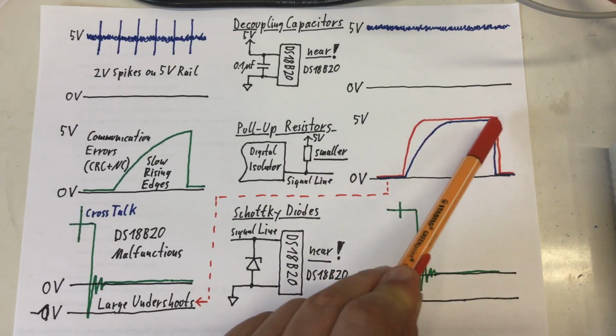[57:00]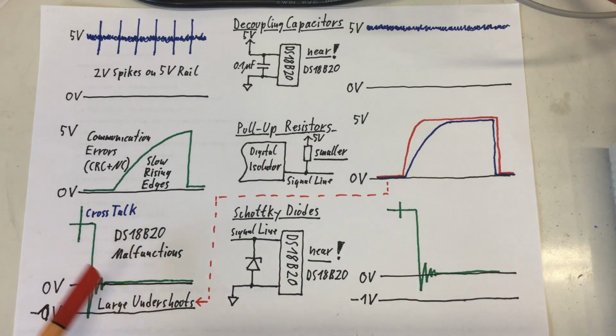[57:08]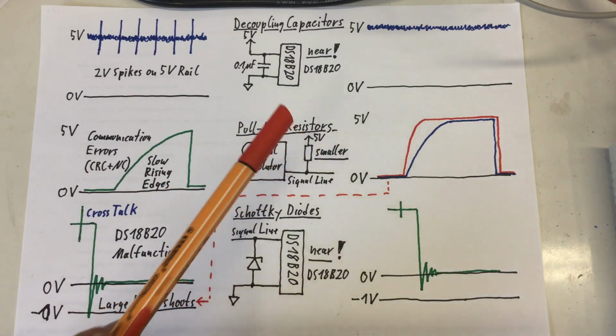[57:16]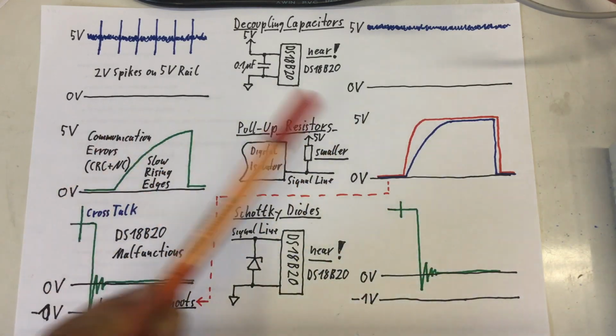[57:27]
But we weren't there quite yet. We had to increase the values of our pull-up resistors again. That made our signal not that nice, but nice enough so we didn't have any communication errors. And that in turn also influenced, in a good way, the undershoots. Meaning the first time we put in these really aggressively small pull-up resistors, we probably made the undershoot problem worse. So we have a little feedback loop here.
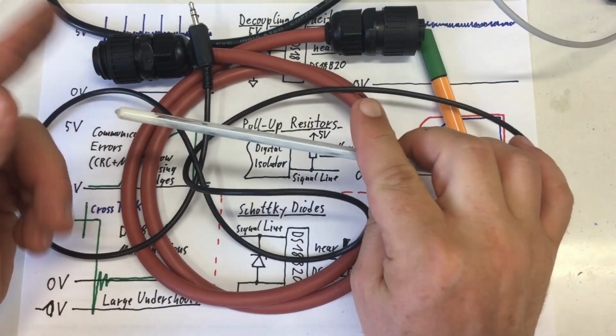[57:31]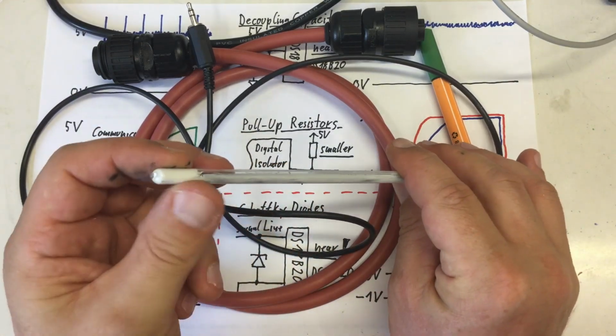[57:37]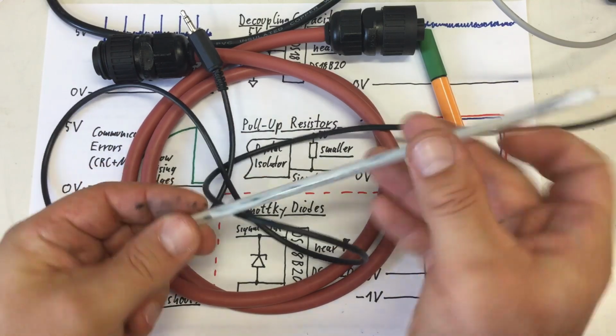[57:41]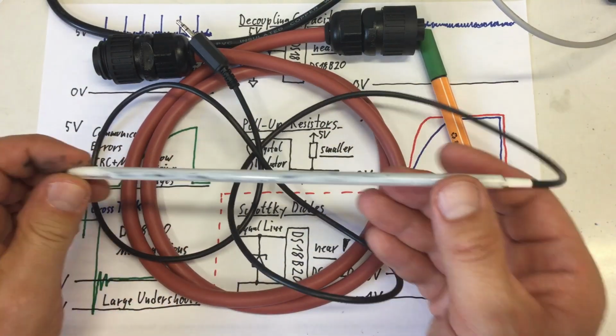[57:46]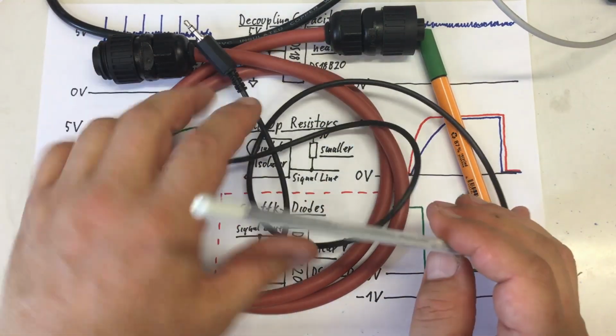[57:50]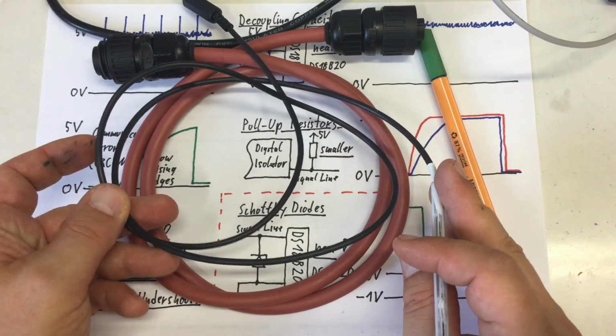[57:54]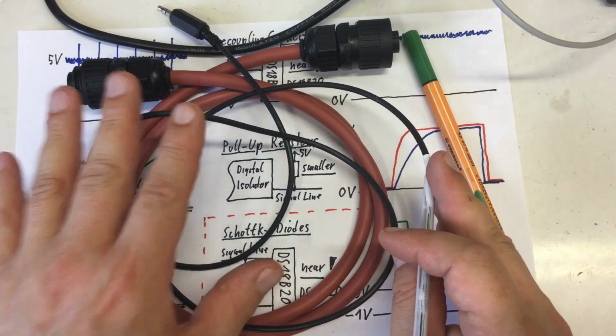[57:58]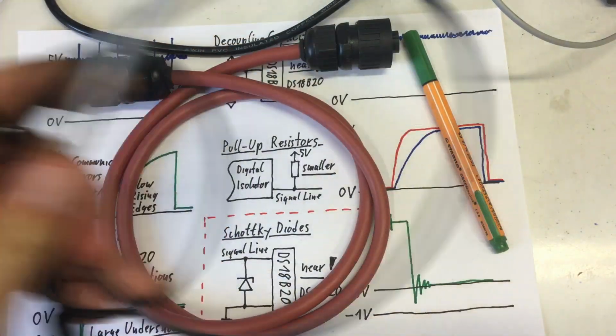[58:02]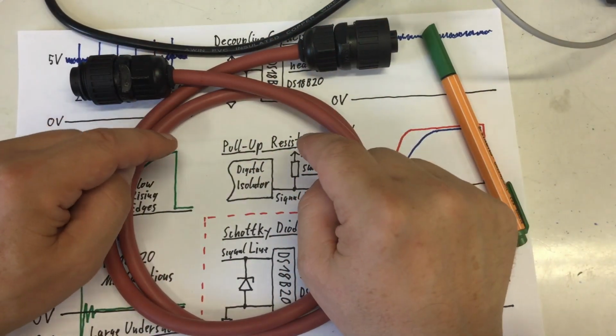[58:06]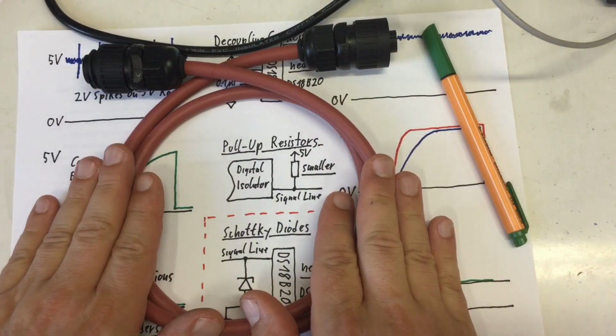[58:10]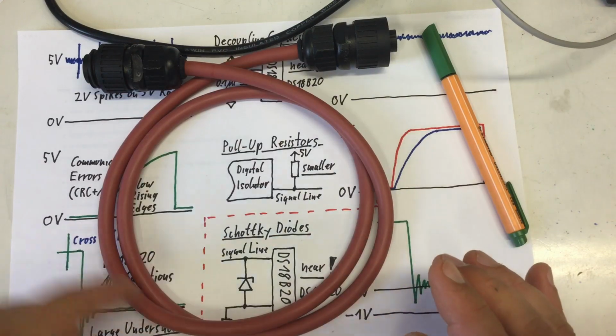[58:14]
Let's talk about the elephant in the room. I always had that third DS18B20 temperature sensor attached, nicely installed in this glass tube, which I melted shut, so I can put it into the etching solution, and it's attached to the controller by a 1 meter signal cable, made to carry signals. And we never had problems with that one. The other 2 sensors in the water bath itself, which gave us so much trouble, were also connected by just 1 meter of cable to the controller.
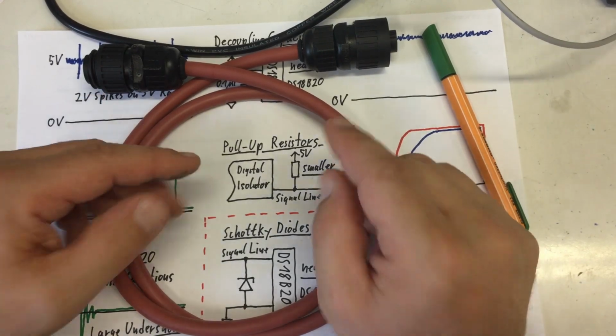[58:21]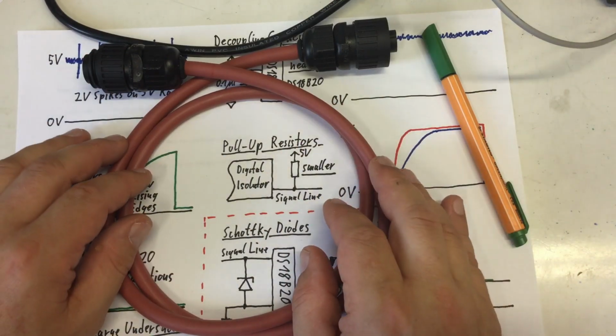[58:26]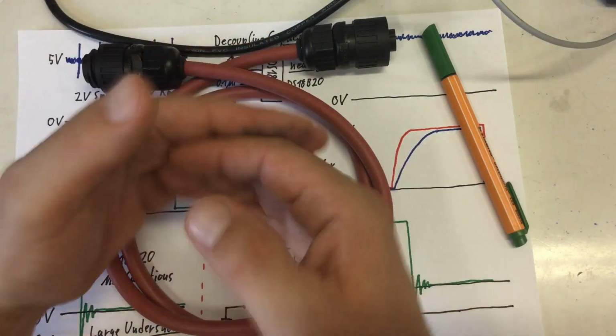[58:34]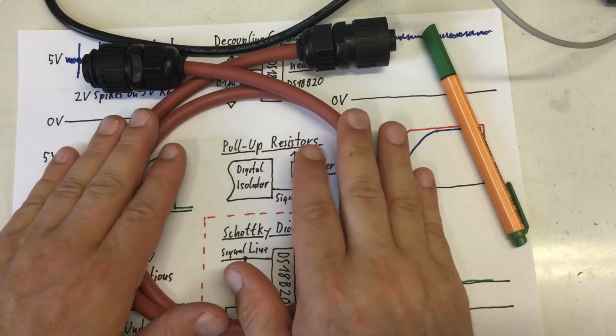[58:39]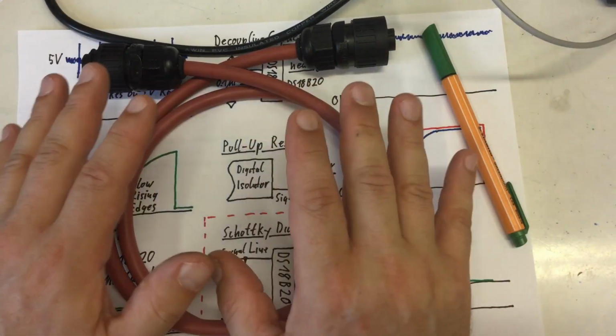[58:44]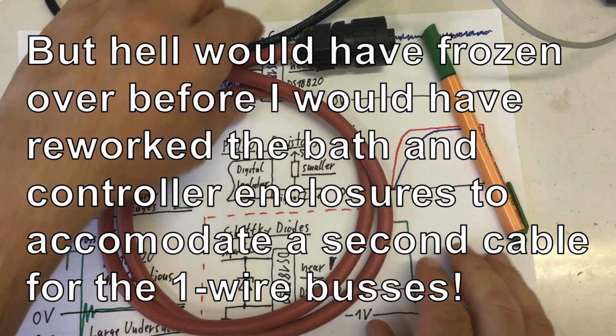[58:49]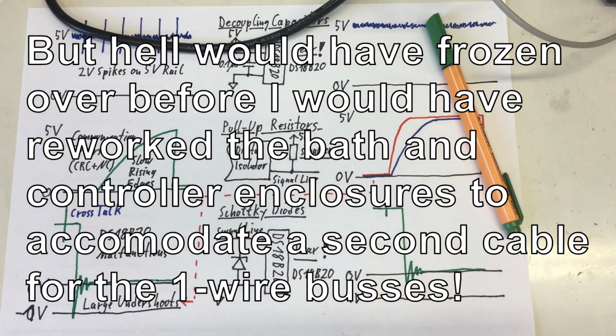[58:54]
But this is AC mains cable, not designed to carry signals. And all the parasitic capacitance and inductance and capacitive coupling between the wires and inductive coupling between the wires, it messed up our signal completely. And in the end, this cable is the reason we had to go through all the trouble here.
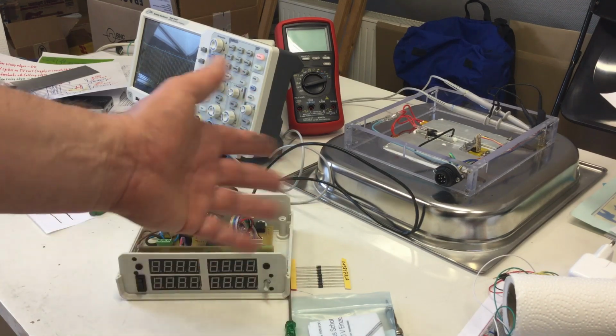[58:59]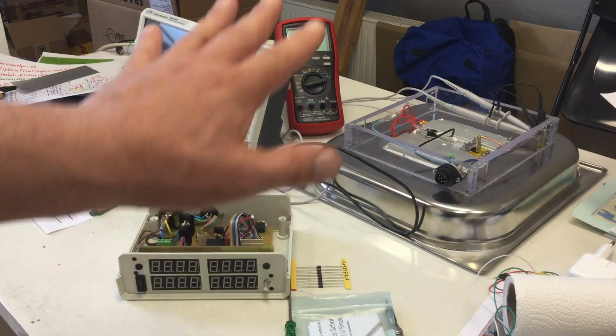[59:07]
So next time you see my controller, it will be all closed up, nice and tidy, and we can finally talk about software and temperature regulation.
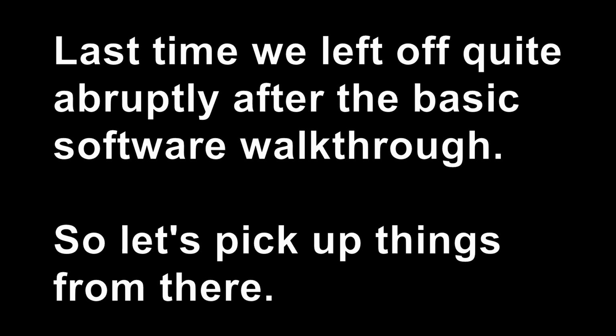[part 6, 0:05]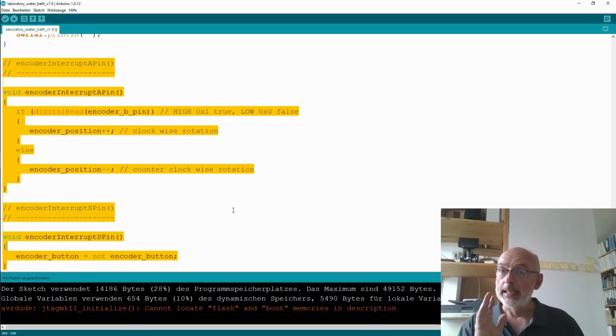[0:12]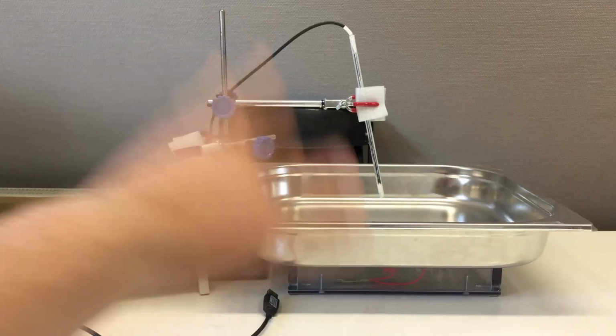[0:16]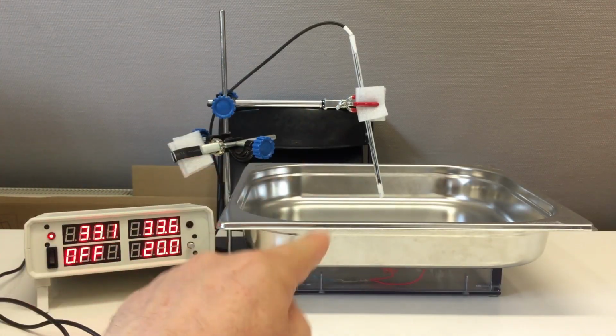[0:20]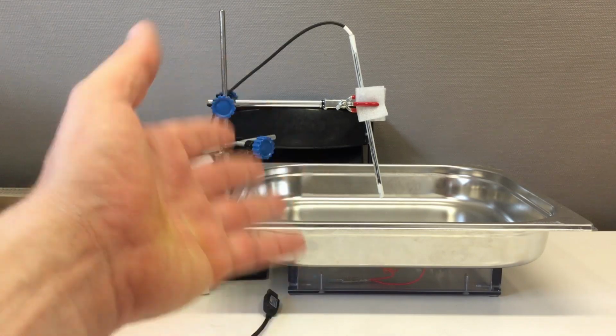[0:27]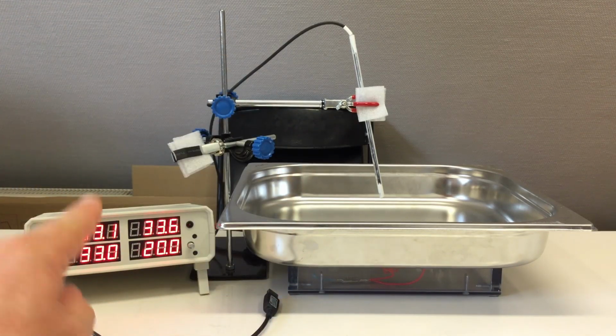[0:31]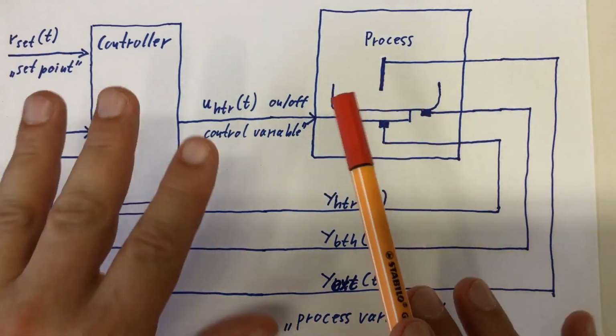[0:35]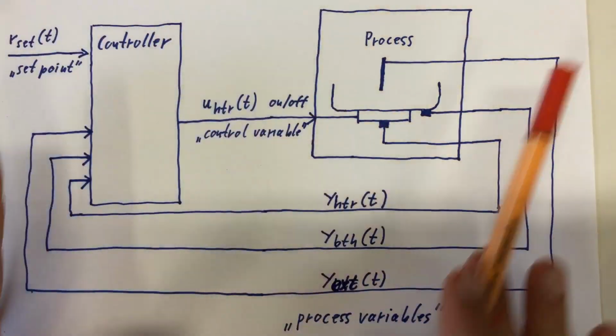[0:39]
Now, let's do something more interesting. Something interesting meaning let's actually try to control at least some temperatures, for example, the temperature of the heating element in my water bath using a piece of controller software. Before we actually modify our controller class to do something useful, let's have a look at the big picture.
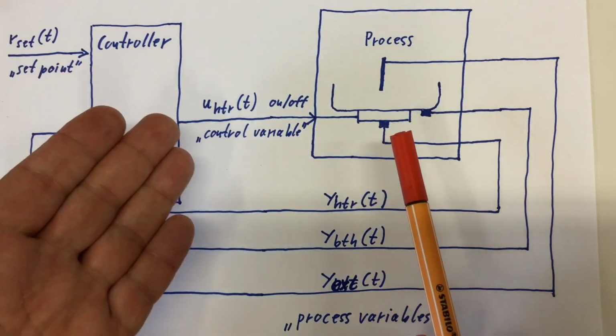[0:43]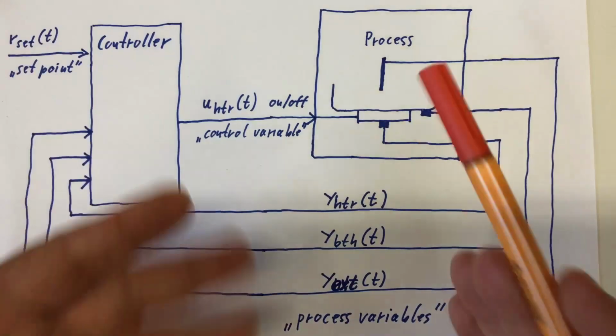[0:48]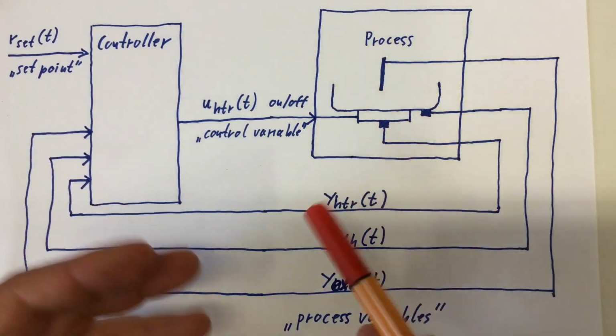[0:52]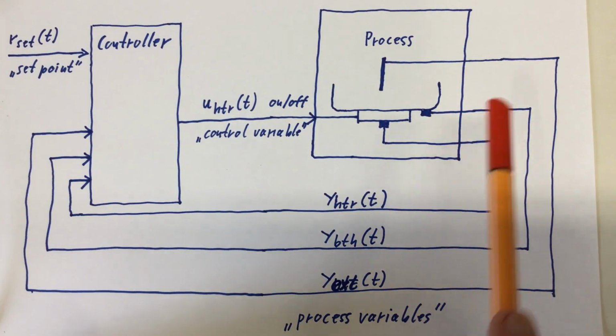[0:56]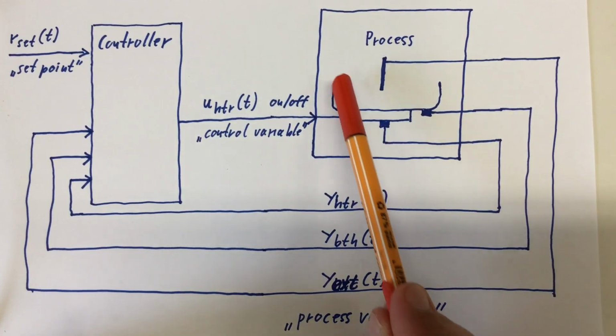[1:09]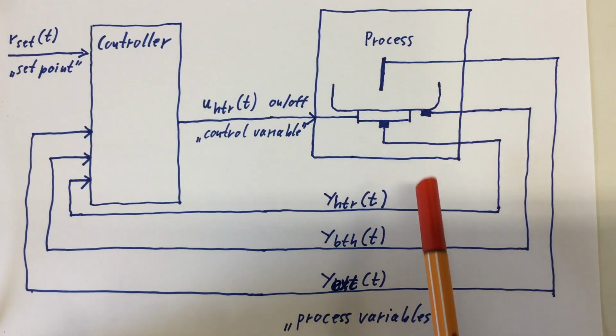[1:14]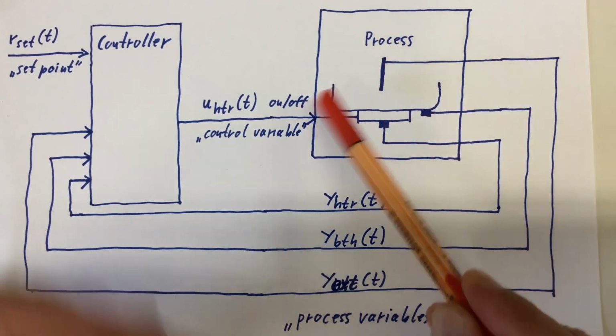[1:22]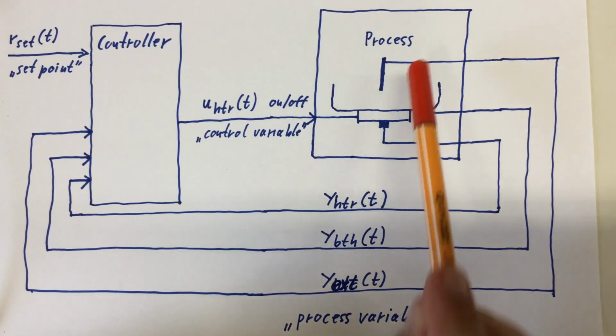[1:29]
And disclaimer at this point, this video is not intended as a tutorial or introduction to controlling theory, okay? With that said, we have our process, that is our laboratory water bath. In controlling theory, this is also sometimes called a plant, for obvious reasons. And it consists of our stainless steel bath with a temperature sensor connected to it, and our heating element with the temperature sensor connected to it, and we have our external temperature sensor, which is currently just dangling in the air. And we get these three temperatures out of our process, and these are called the process variables, and in controlling theory they are always called Y. Okay, so we have Y heater, Y bath, and Y external.
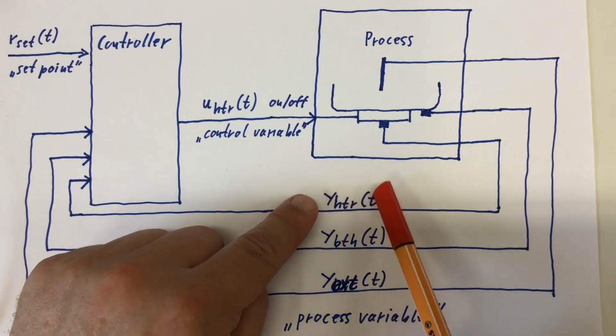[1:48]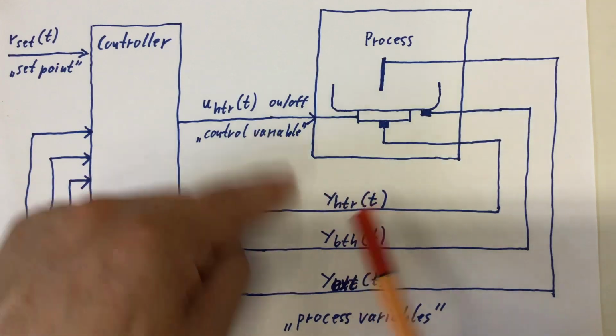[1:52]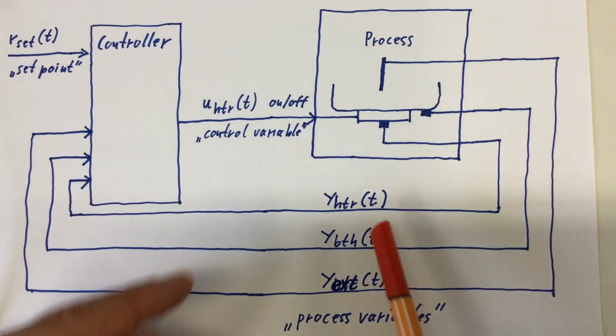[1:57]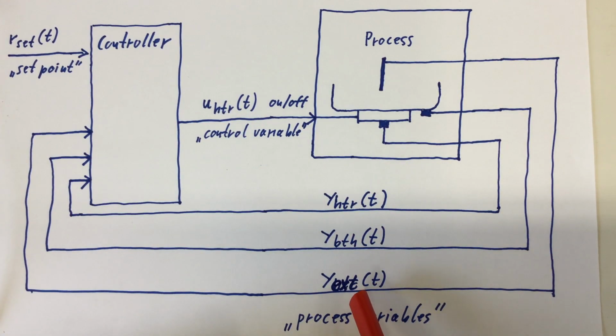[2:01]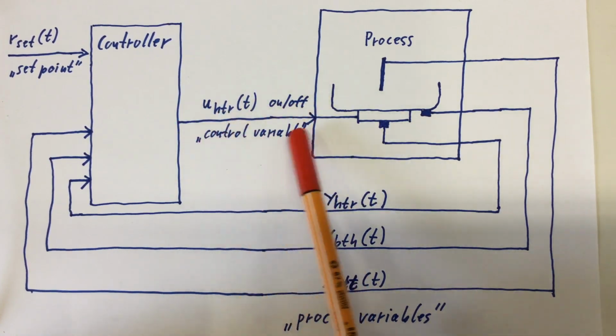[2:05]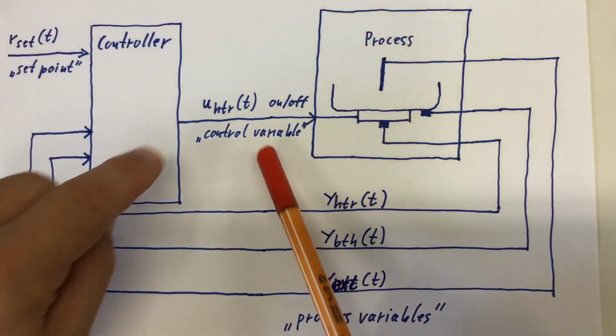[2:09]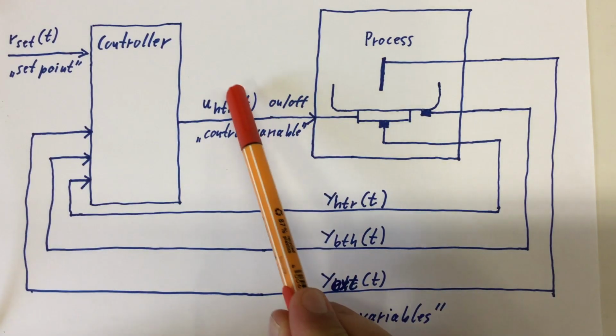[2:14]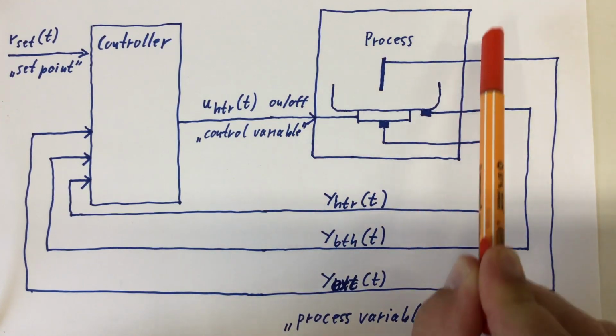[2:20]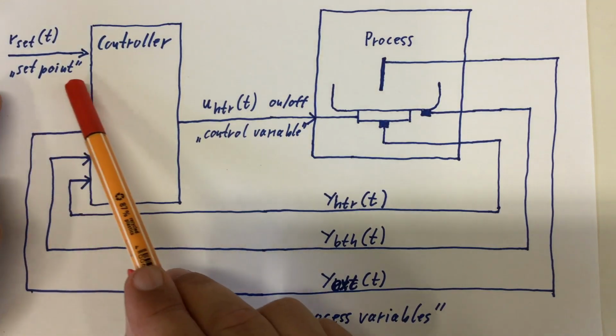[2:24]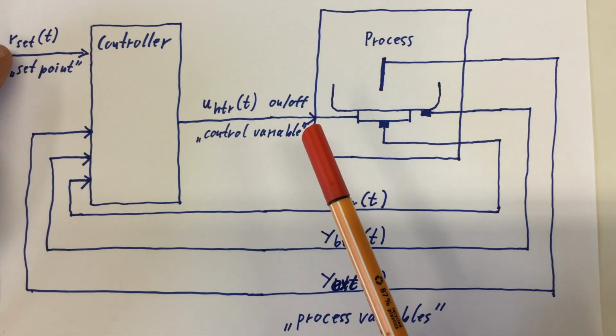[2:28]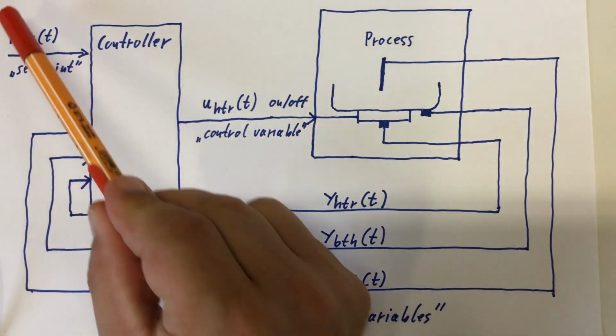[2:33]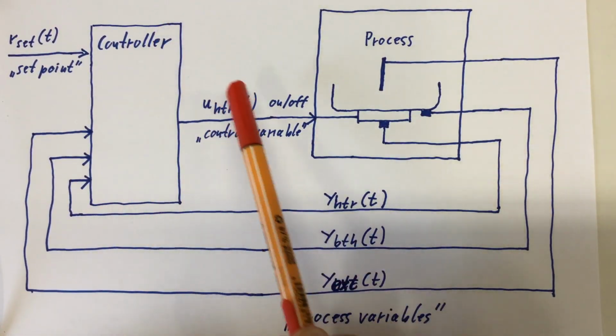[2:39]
And these are always functions over time. This is basically a function that changes over time, for the heater temperature, the bath temperature, and the external temperature. We have a control variable, and they are always called U. In my case, I called it U heater because it's the heater on off. And that's also a function over time because we can switch it on and off over time. And then we have what's called a set point, and in control theory they use an R for set points, so I just called mine R set. Function of t again, because our set point might also change over time.
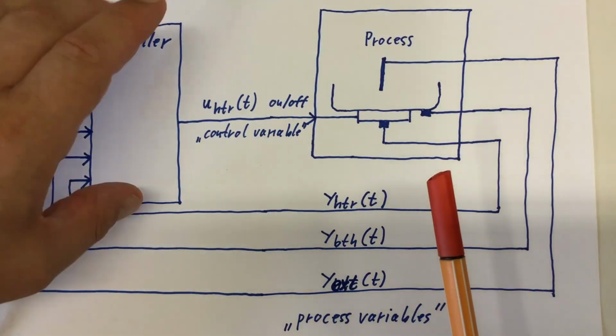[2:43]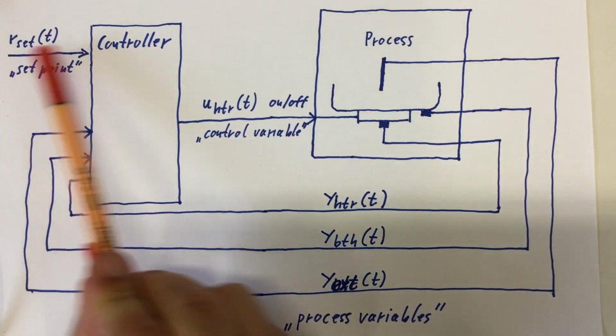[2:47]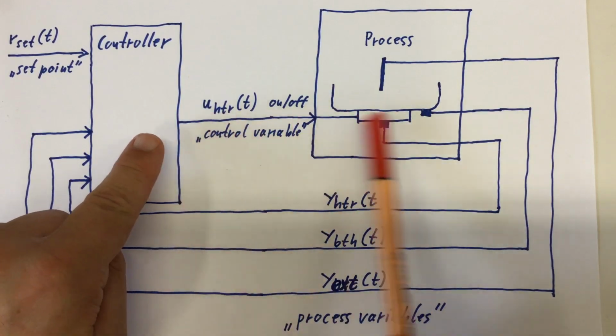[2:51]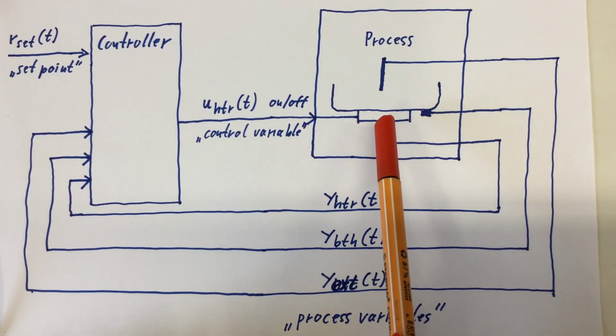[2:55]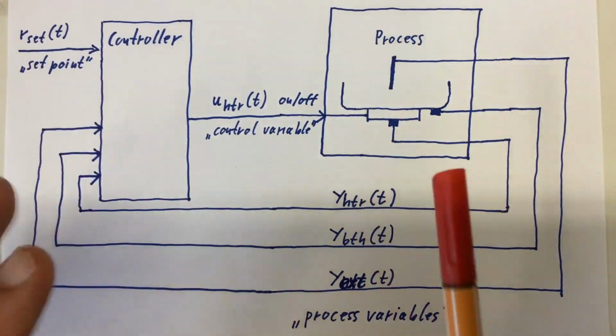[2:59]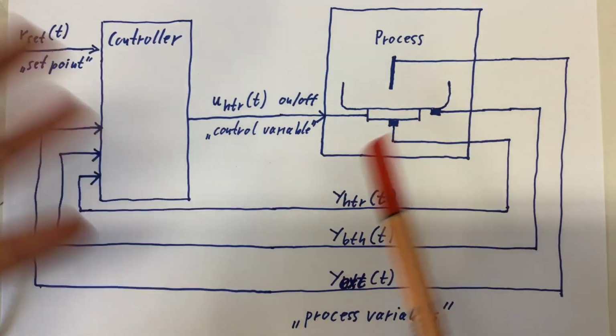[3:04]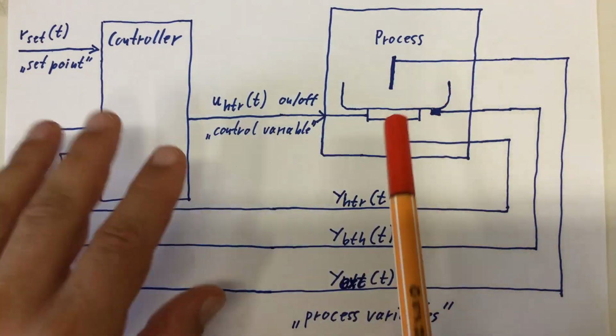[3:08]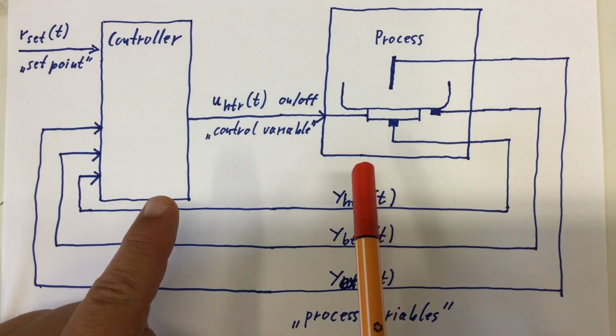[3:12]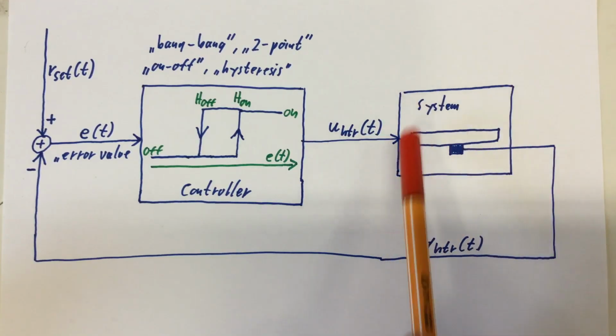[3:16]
And our controller now gets all process variables, and it gets the set points and takes that information to switch on and off the heating element. That's a bit much if I want to keep this video below 2 hours, I guess. So keeping that picture in the back of our minds, let's try something simpler first. And build a controller just for the heating element, okay? So we just look at the temperature of the heating element, and our controller will give it an on-off signal.
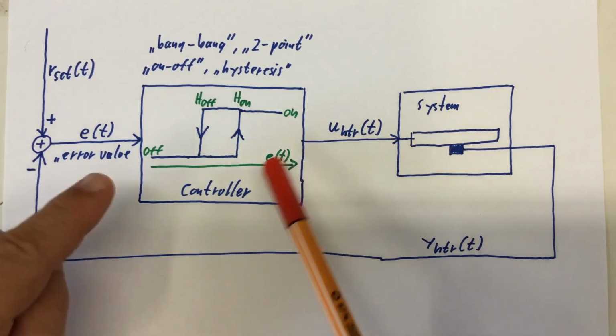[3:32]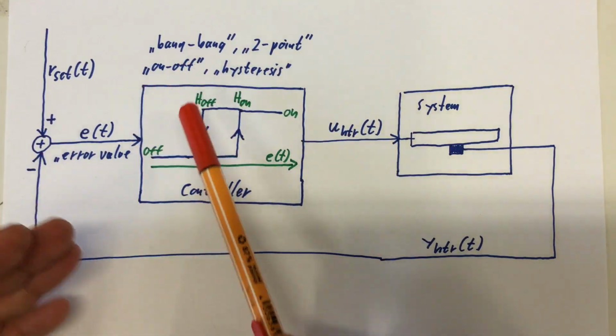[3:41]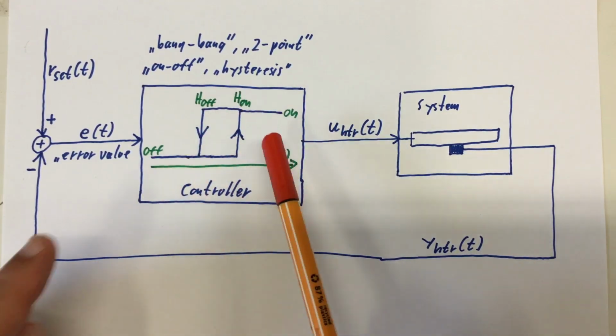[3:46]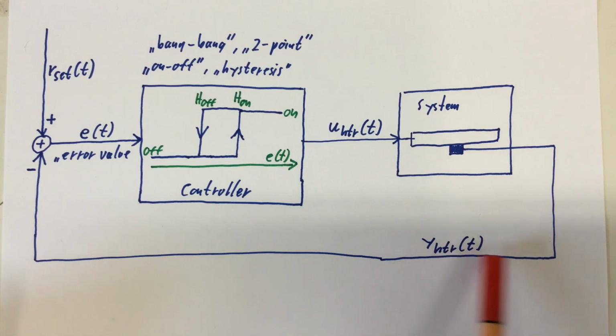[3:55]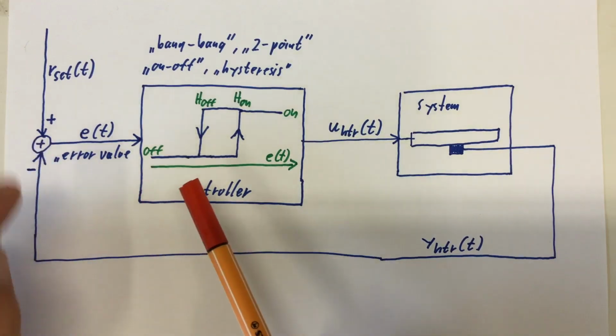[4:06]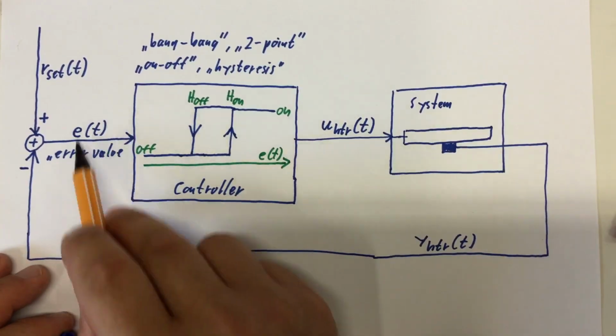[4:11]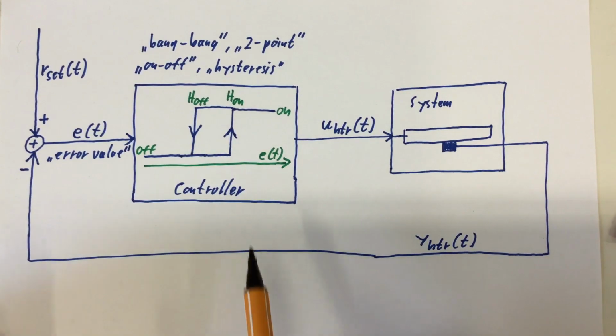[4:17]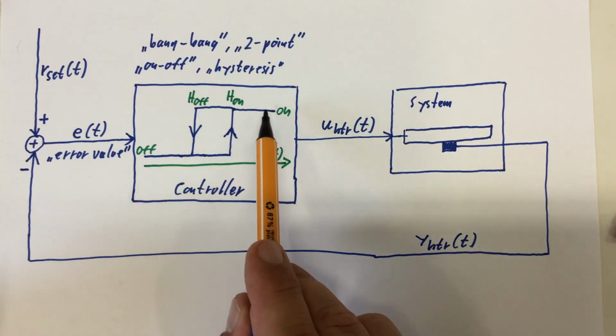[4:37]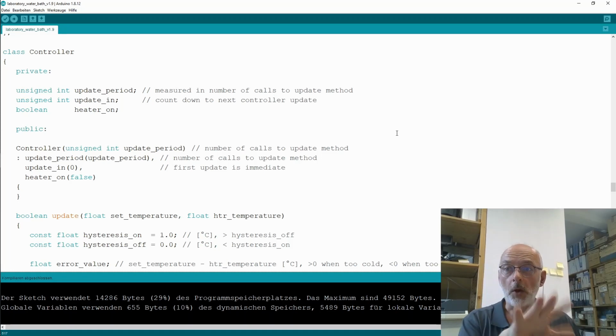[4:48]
And the controller I want to try first is a so-called bang-bang or 2-point or on-off or hysteresis controller. And if you look at the picture, it very much looks like a Schmitt trigger, and that's basically what it is. So our Y heater, our heater temperature, is subtracted from our set temperature, and that gives us, we haven't seen that in the other picture, an error value, E, changing over time, of course. And what such an on-off controller does is, if the error value is bigger than a hysteresis on value, it switches on. And if the error value goes back again and reaches a hysteresis off value, it switches off.
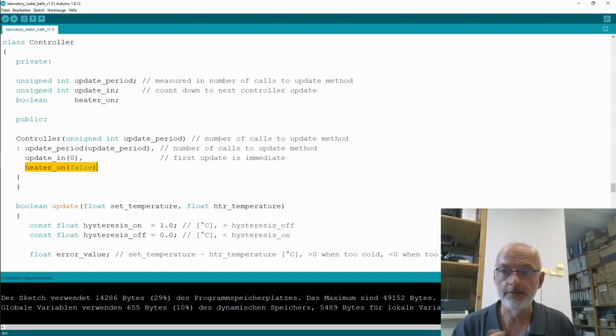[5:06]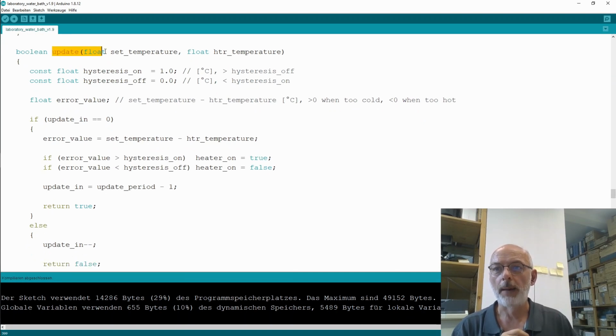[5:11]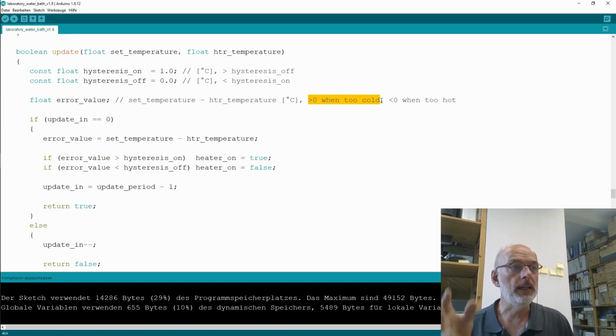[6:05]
That's simple. So if we look at the code changes in our controller class, there's not much. I now have actually a variable heater on boolean, and I initialize that with false in the constructor, so the heater should be off. And the other change is, of course, in our update method, which now gets the set temperature and the heater temperature. And I have these two hysteresis constants. So on at 1.0 degrees Celsius error, that is if my heating element is 1 degree too cold, and off at 0.0, that is when my heating element is actually at exactly the set temperature. I have the error value, we saw that in the picture. That's simply the set temperature minus the heater temperature. So this is greater than 0 when the heater is too cold and smaller than 0 when the heater is too hot.
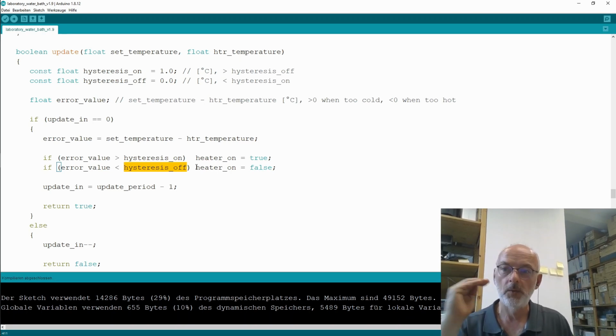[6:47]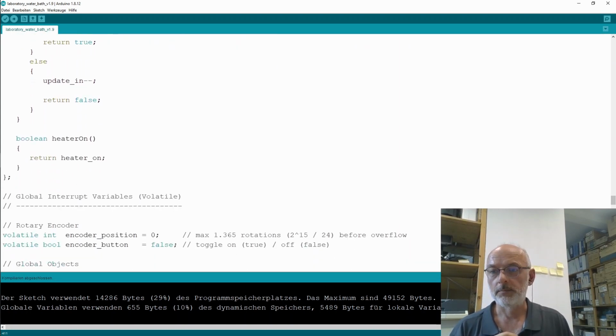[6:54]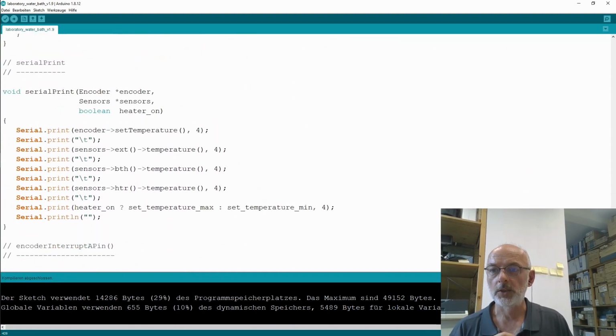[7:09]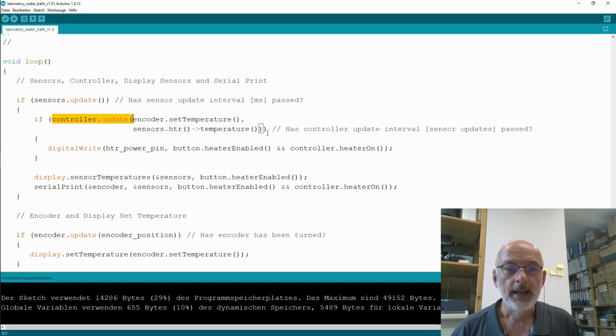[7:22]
So, in an update, the update counter is still all unchanged. The error value is the set temperature minus the heater temperature, and if the error value is greater than the hysteresis on, we are too cold, at least 1 degree Celsius, we switch the heater on. And if the error value is smaller than the hysteresis off, 0 degrees, so we are exactly on, we switch the heater off. And of course, I return that here when I query heater on. No longer a constant true here, but really returning that Boolean value. And I think the changes in the main loop are minuscule. I just pass the set temperature and the heater temperature to the controller update. That's it. Now let's see what that does.
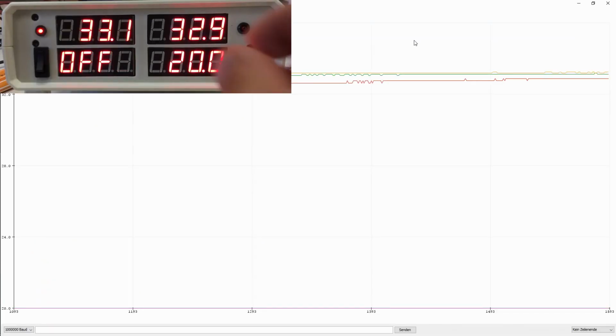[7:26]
Okay, let's try that. I have the serial monitor, that is the serial plotter of the Arduino running too. And let's say we want to heat the element up. It's currently at 33 degrees to 35.
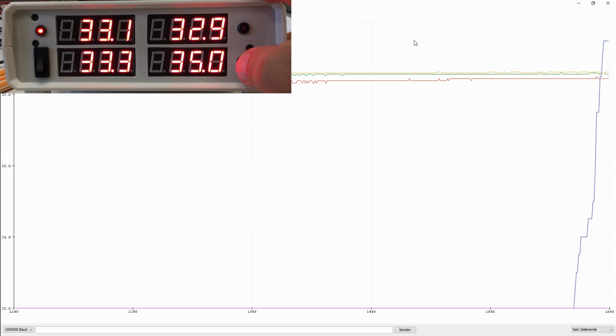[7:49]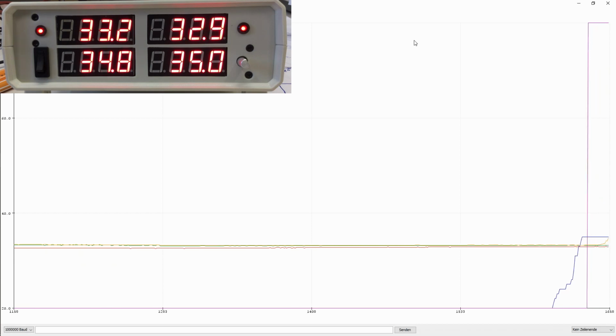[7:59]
You see the blue line is my set temperature, and yeah, we have here an overshoot. And we do have a considerable overshoot, but you see the lilac line, that was when the heater was on. You see the heater was on, and we basically had absolutely no reaction, and then the temperature rose.
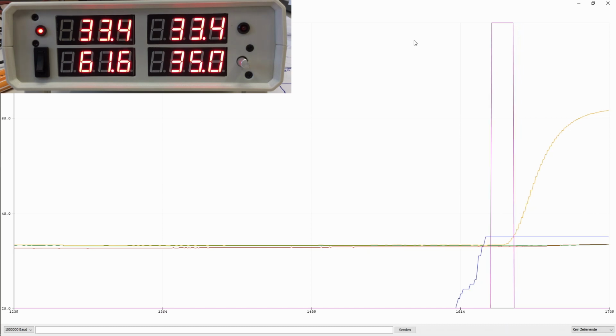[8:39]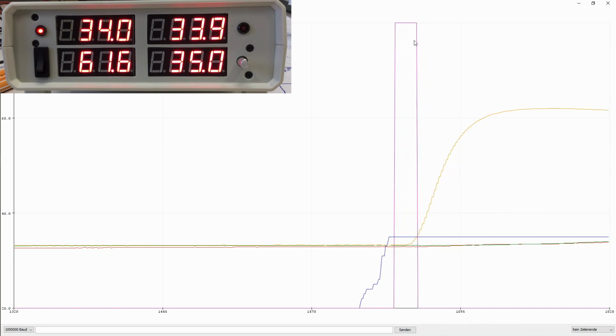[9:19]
And now, yeah, it's still rising and rising and rising. Well, that's not really good, is it? But to be honest, that was to be expected. I think we will have to wait quite a while until we are back down again, but yeah, that overshoot will be the... Oh, we are already going down again. Very slowly.
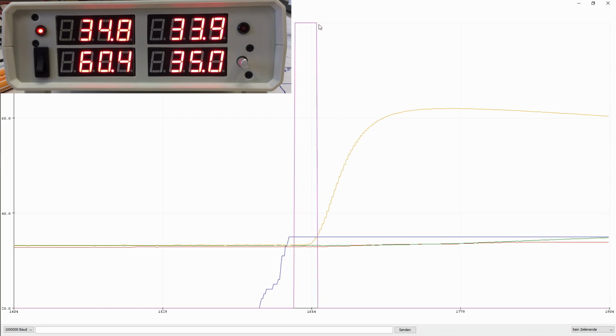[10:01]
yeah, until we reached my set temperature, which is okay, and then the controller switched off the heating element, but the temperature kept rising and rising and rising and rising. And now it's slowly and steadily falling. I don't think we have to watch that in its entirety. Let me set up the next experiment.
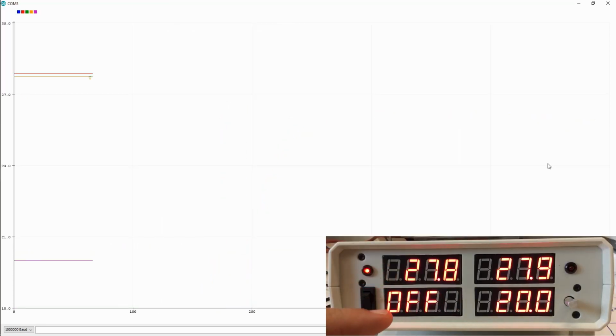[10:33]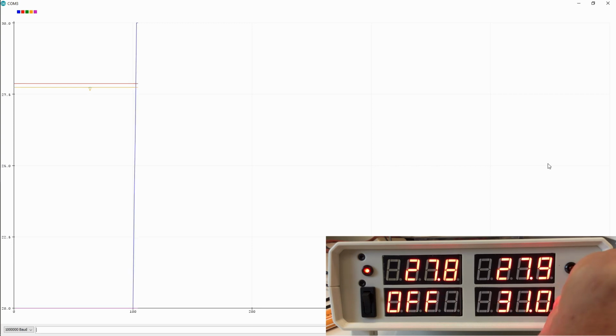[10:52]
Okay, let's try this again. It's the next morning. Things have cooled down again, and yeah, we're going currently through a heat wave here at the time of the recording. And start at 28 degrees. And again, I say my target temperature is 35 degrees and go. Oh, sorry. I have to switch it on too. Go.
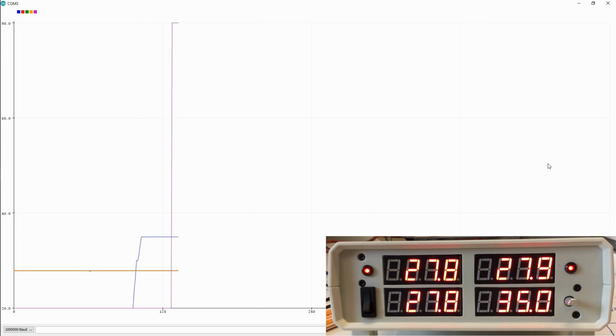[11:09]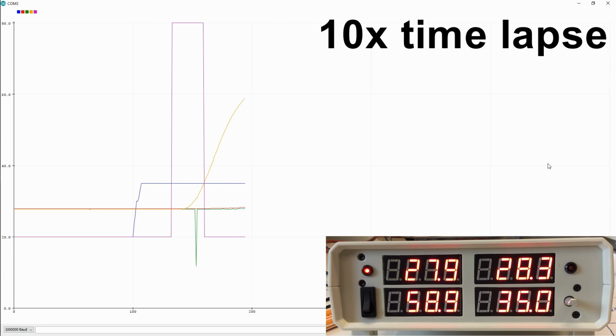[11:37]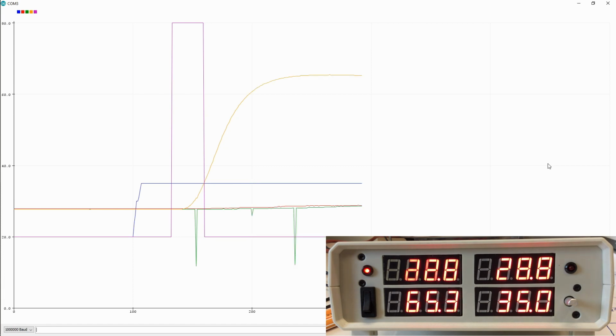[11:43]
And we see nothing happens, nothing happens. And now the temperature is rising. And we crossed 35 degrees and it continues to rise. I'm actually expecting the overshoot to be a wee bit higher this time. We'll see. And we plateaued out and now things are cooling down again. Okay, I will let that run a while. And yeah, we make some more experiments.
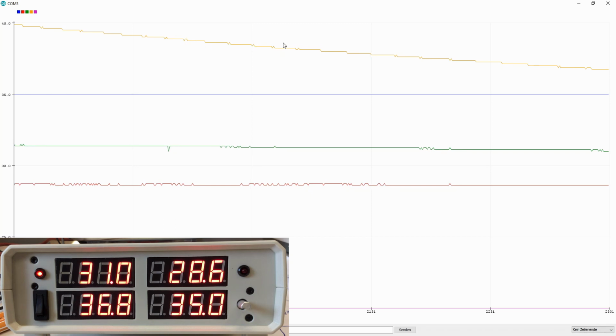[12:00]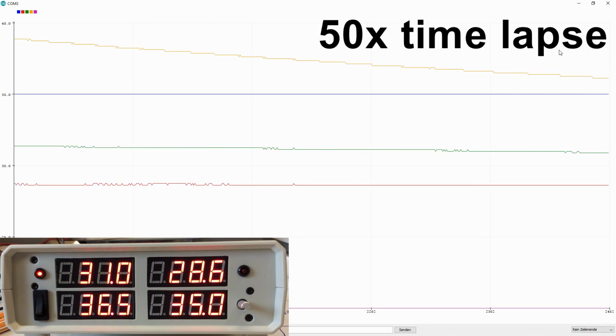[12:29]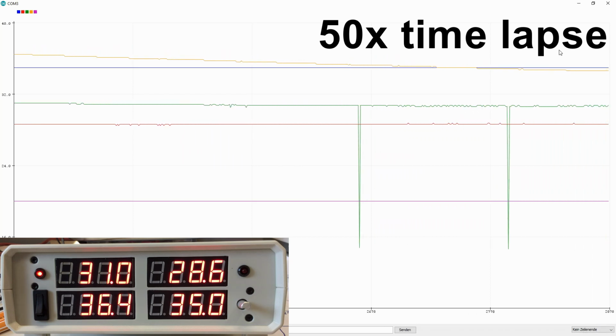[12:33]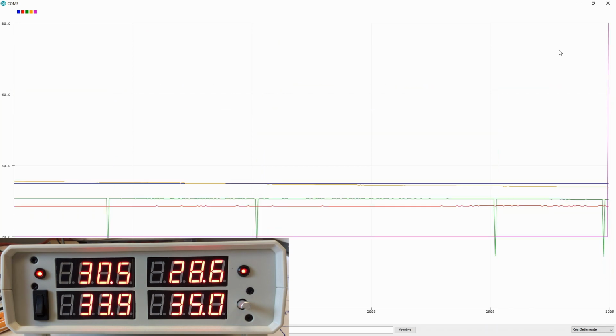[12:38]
So my heating element is obviously cooling down again very slowly. And yeah, we are approaching my 35 degrees set temperature. So we expect it to switch on again at about 34 degrees. Yeah. So we'll see, maybe the overshoot in the second cycle is not as bad. And yeah, 33.9, we are now below our hysteresis, and the heater came on.
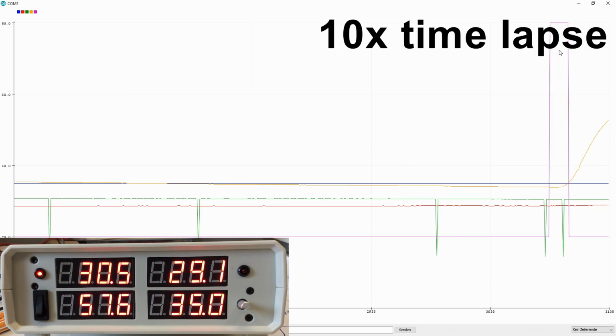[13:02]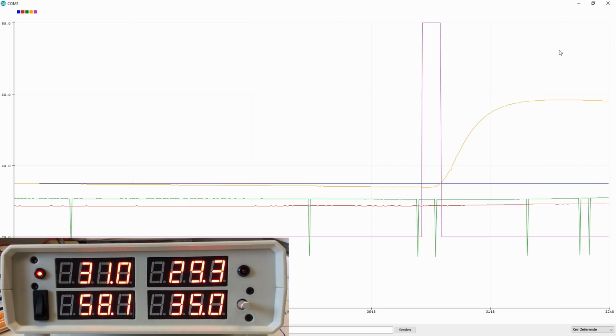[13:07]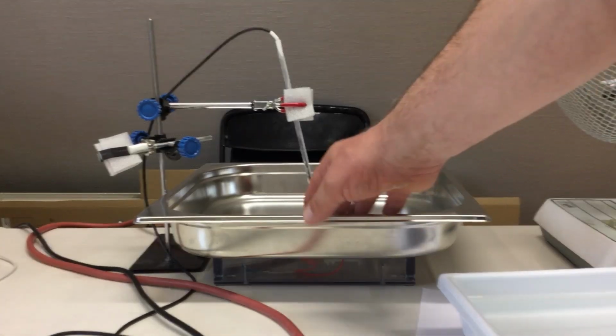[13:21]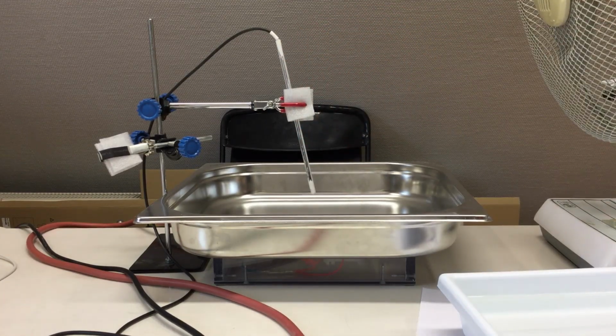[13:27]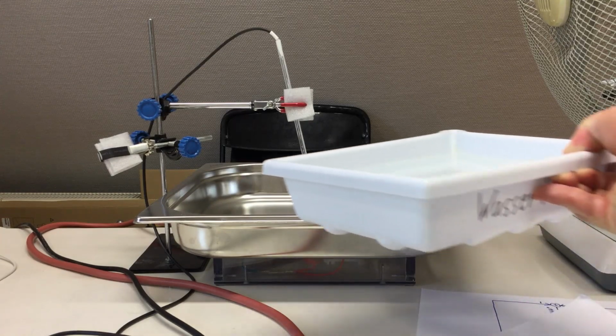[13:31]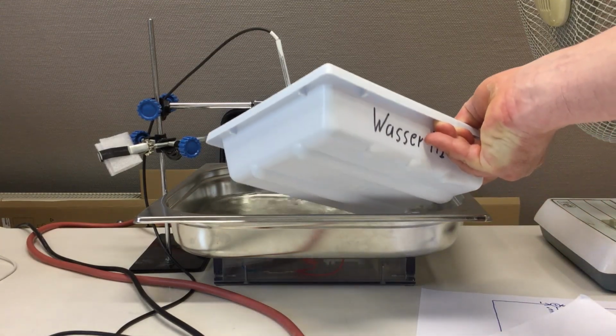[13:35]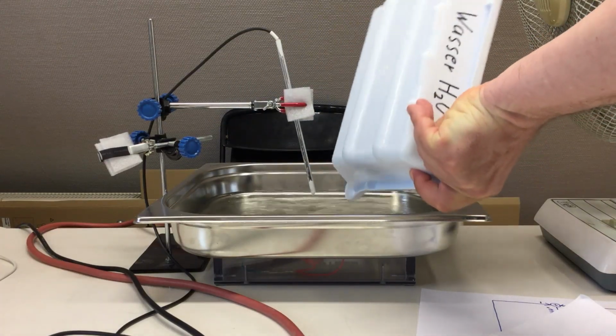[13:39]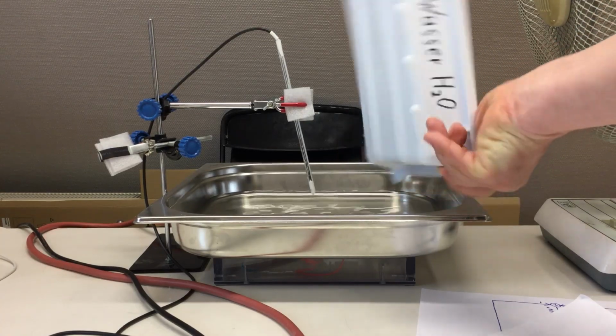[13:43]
And temperature is rising again, of course, and let's see. And we plateaued out, and yeah, it's cooling down again. I will stop the video here at that point, and then we do at least 2 more other experiments. Up to now, our water bath was dry, and yeah, the external sensor was just hanging there in the air. But now let's put in a liter or 1,000 grams or 1 kilogram of water
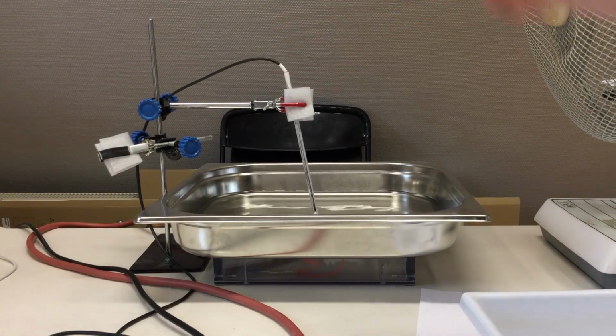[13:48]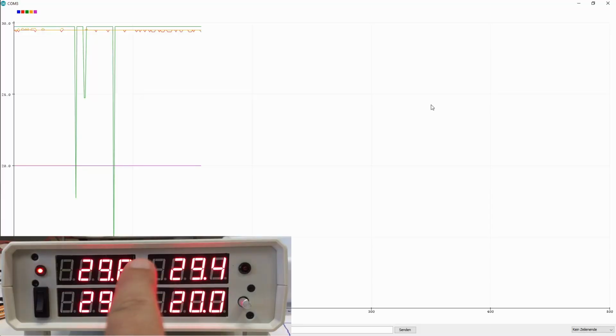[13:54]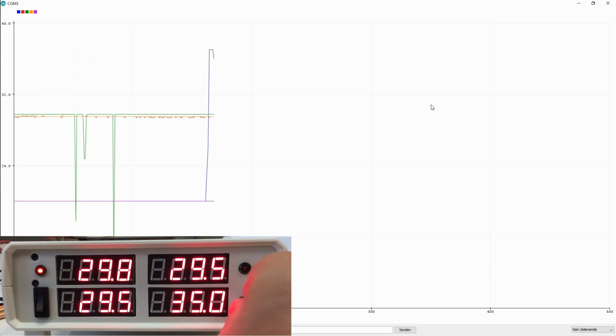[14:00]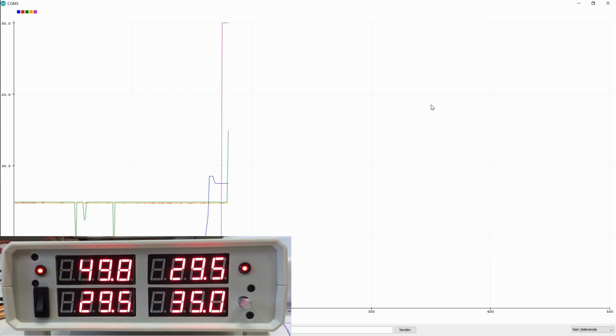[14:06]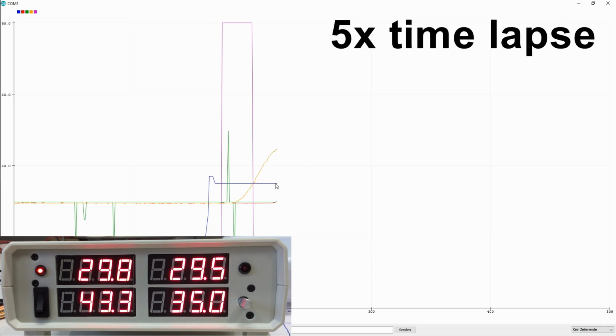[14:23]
just as a thermal buffer and see if, yeah, we can put the sensor in too. Let's just see if things are different now. Okay, our goal should be 35 degrees, and here we go. So, heater came on and heater stays on for quite a while, and heater is off. So yeah, business as usual. But we are already going down again.
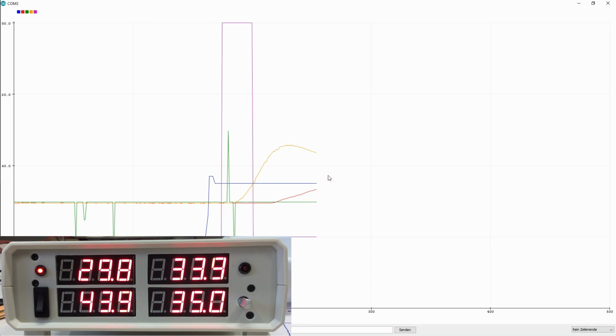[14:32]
There was probably a sensor mishap in between. Yeah, I still have these sensor mishaps. I was fumbling around a little bit and thought I could make it even better, but I made it worse, of course. And now, any second, our heater should come on again.
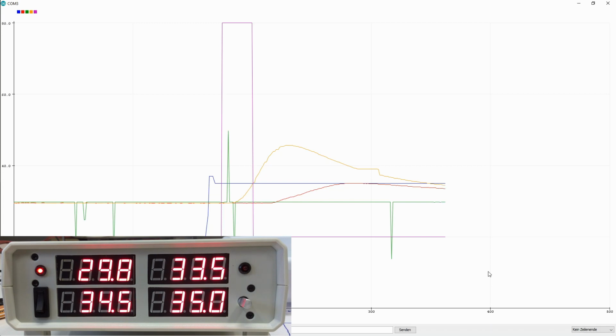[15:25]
We need to be below 34.3, 34.1, 34.0, and heater. Wow. So basically what we have managed here with the water in is to capture here with one picture 2 cycles, which were the last 2 experiments we did, with just a much longer time constant. So the water is doing something.
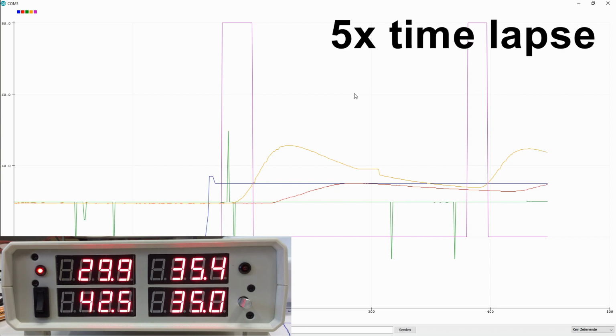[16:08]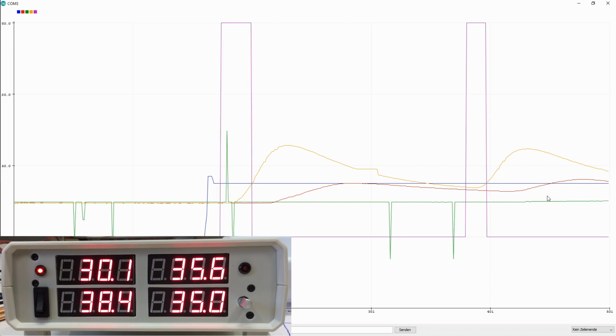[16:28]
And I would love if we could capture just the next crossing with my 35 degrees set temperature. This is, by the way, which sensor is that? That's the water sensor, directly above the heating element. It's almost touching. Yeah, we can ignore that for now.
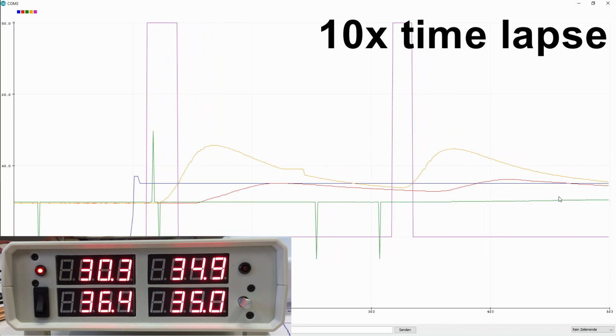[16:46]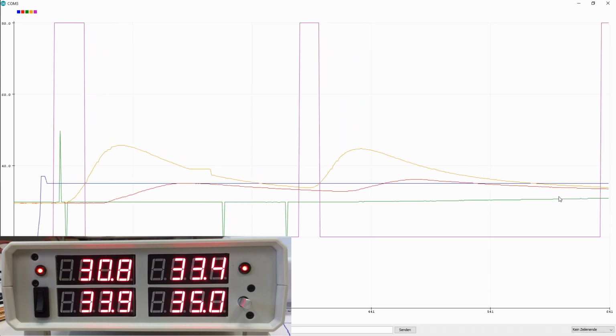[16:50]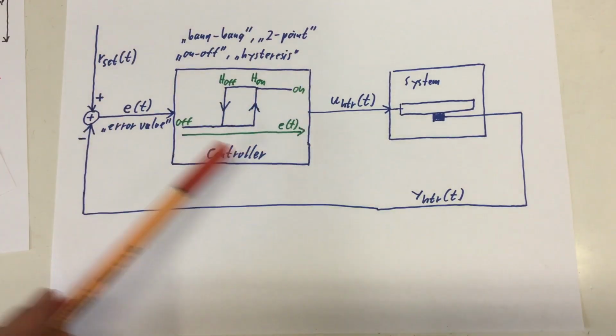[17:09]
And the heater is coming on again, just for a very short time. And I think I can pull the plug now. Okay. Wonderful. A simple bang-bang controller obviously doesn't work for that application, and to be honest, I didn't expect it to,
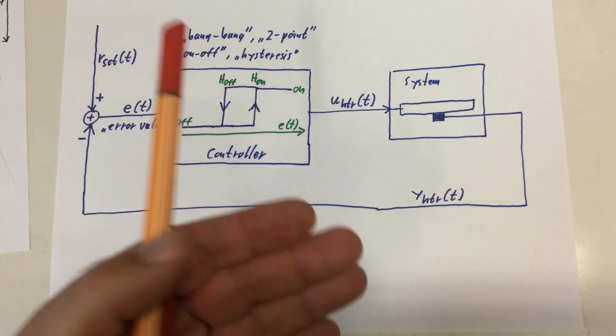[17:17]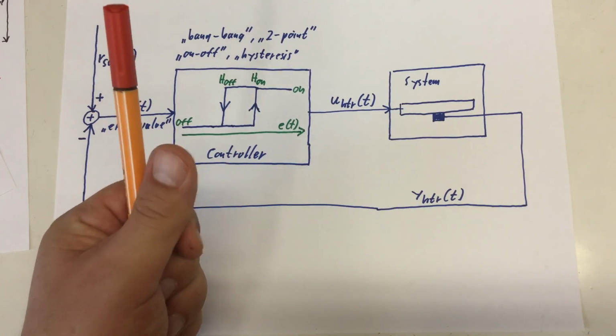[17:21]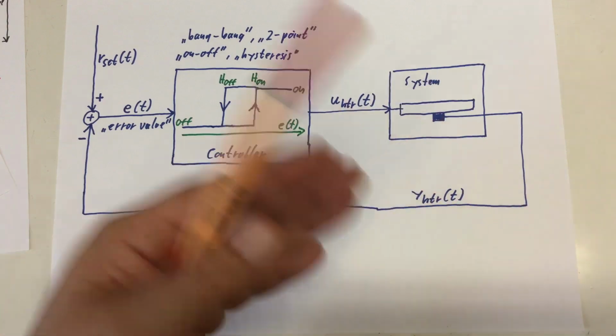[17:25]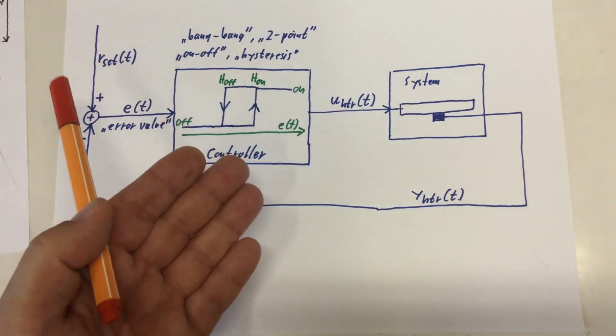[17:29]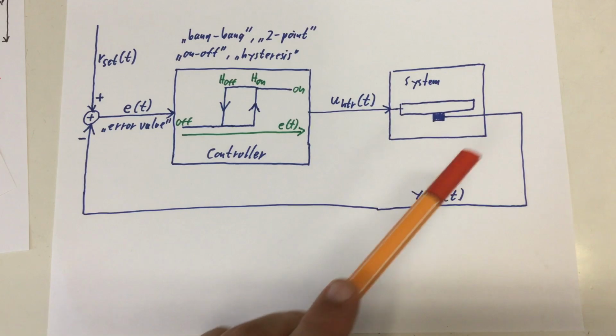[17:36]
because remember, I'm bang-bang controlling, with a cord switch, my prototype of the laboratory water bath now for quite a while, every time I was etching a PCB. However, we learned quite a lot about the behavior of our system.
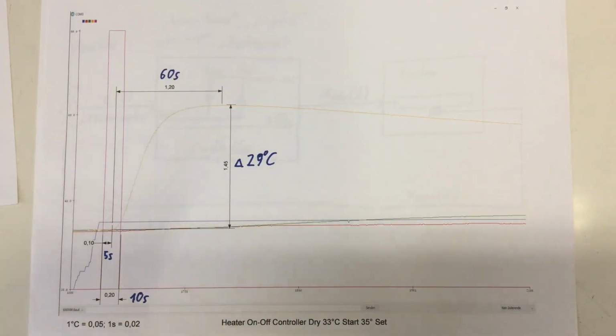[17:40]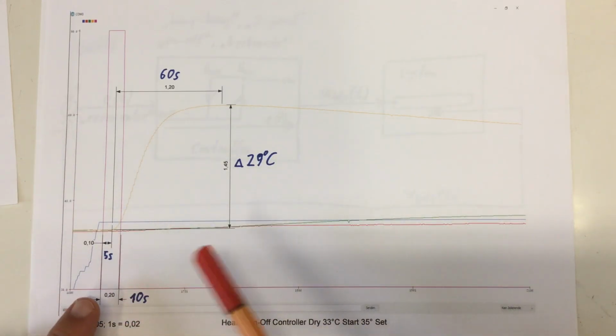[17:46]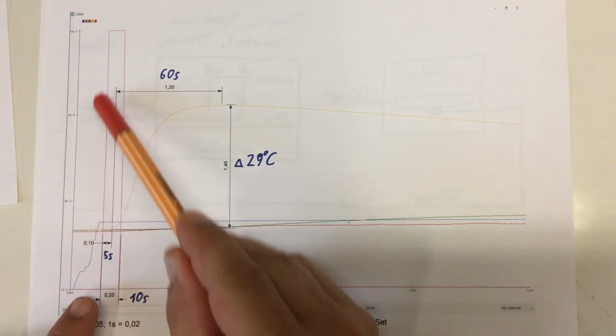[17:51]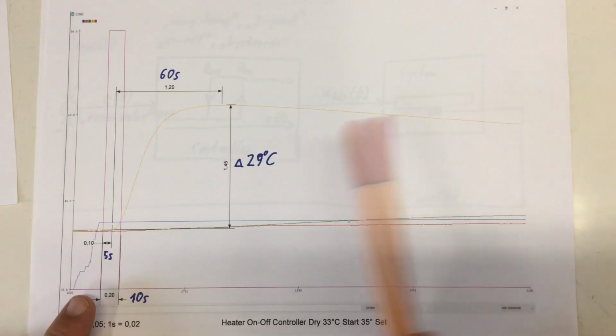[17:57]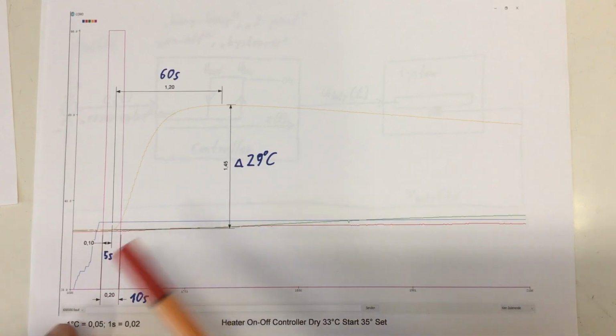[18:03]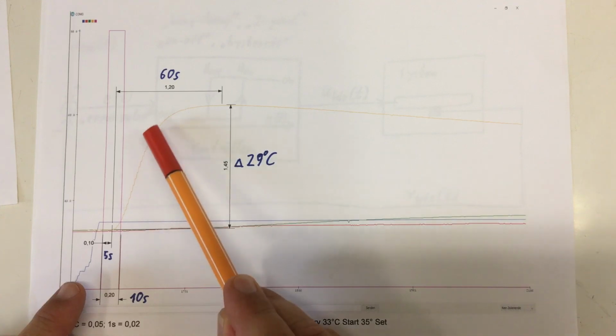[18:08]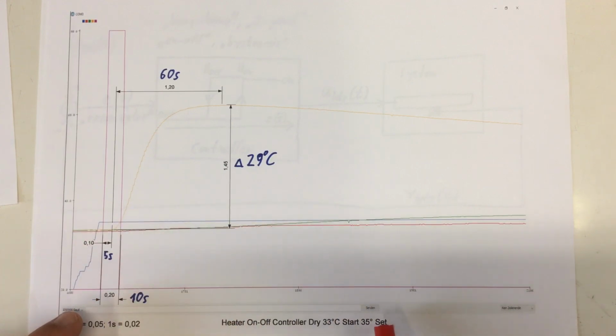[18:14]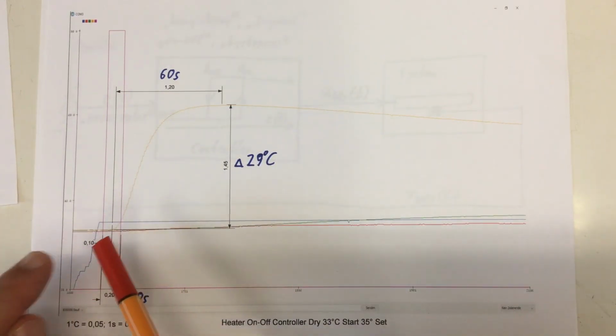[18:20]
Looking at the data of our first run, the initial thing we noticed is that for approximately 5 seconds after the heater switched on, nothing happened with the temperature of our heating element, or better, the sensor attached to our heating element. And only after 5 seconds, the temperature of that sensor started to rise. And it reached our set temperature of 35 degrees 5 seconds later. So in total, the heater was on for 10 seconds.
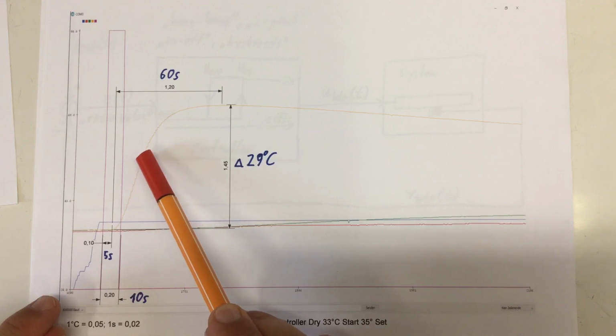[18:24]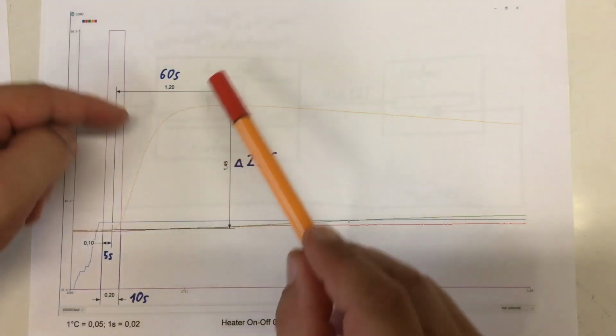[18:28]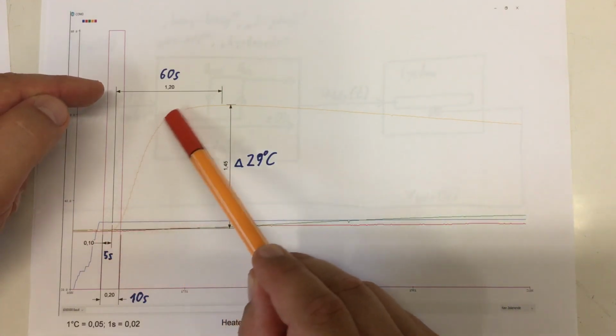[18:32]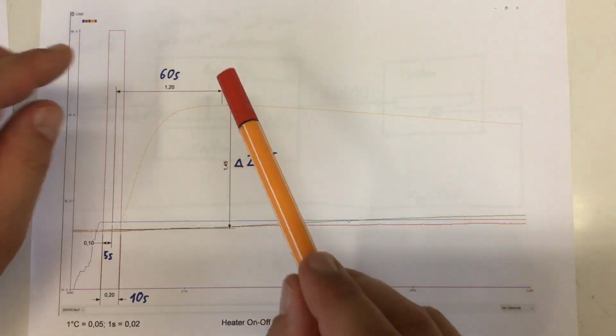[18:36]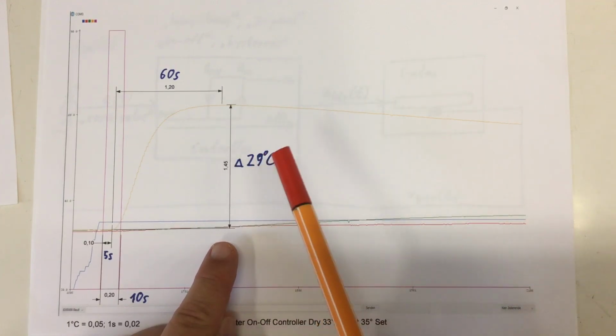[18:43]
But then the temperature kept rising and rising until it reached the peak about 60 seconds from the start, and we increased the temperature of the sensor by 29 degrees C.
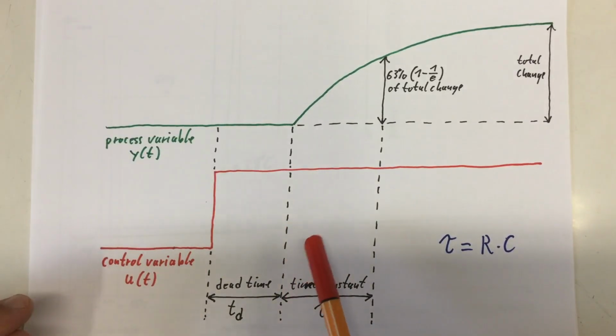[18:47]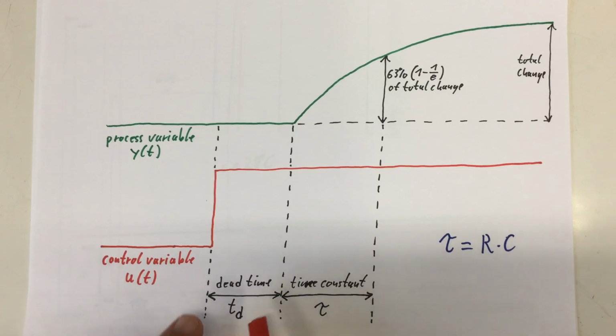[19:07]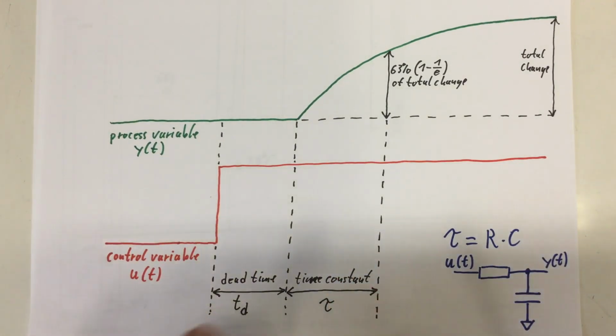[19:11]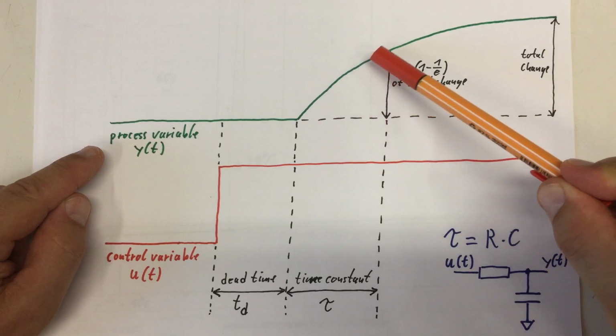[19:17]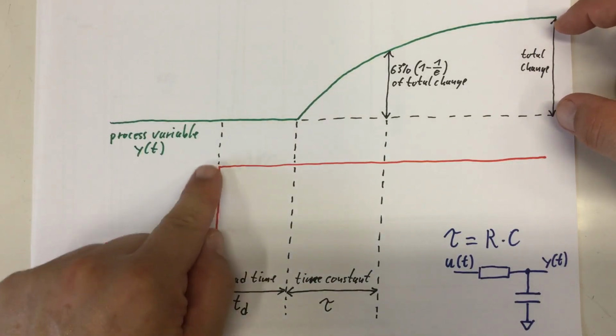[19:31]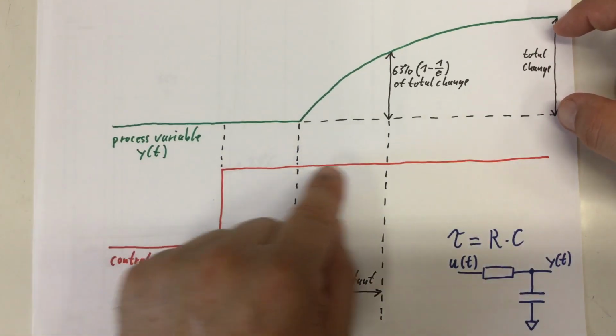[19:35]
In control theory, they call these first 5 seconds, after you changed your control variable, my heater goes from off to on, and nothing really happens in your process variable, that is the temperature of my heater sensor, dead time, TD. They also define a time constant tau. So after your dead time, when your process variable starts to change and it reaches at some point equilibrium again, stays constant, you have a total change of your process variable, our temperature, in response to a change of the control variable, our heating element being switched on.
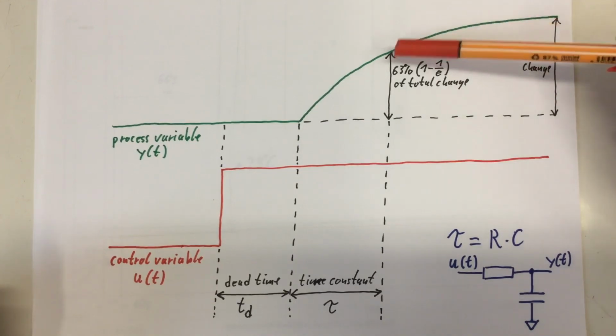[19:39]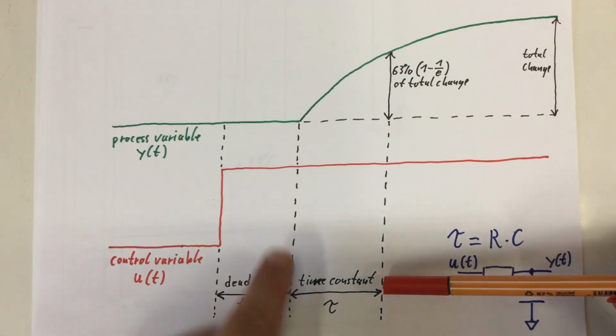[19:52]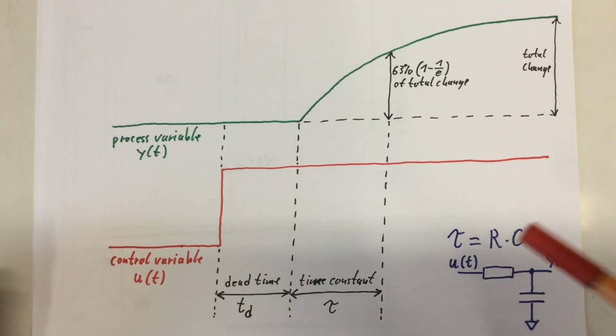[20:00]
And if you take the point in time where you reached 63%, or 1 minus 1 over e, of that total change, and measure the time from when your dead time ended, that's your time constant tau. And if you ever worked with RC elements, you already know tau, because tau in electronics, for our RC elements, is equal R times C.
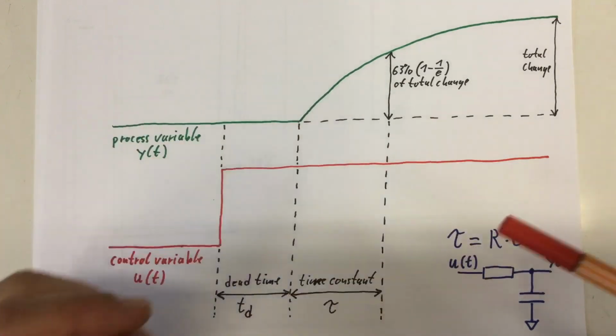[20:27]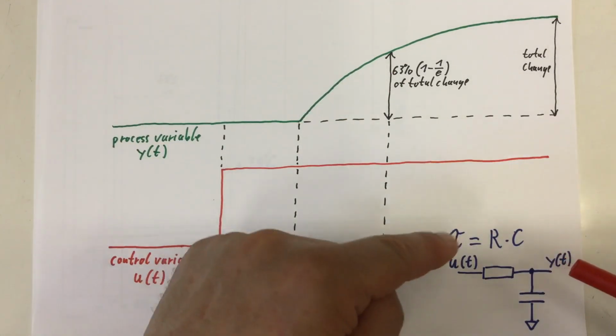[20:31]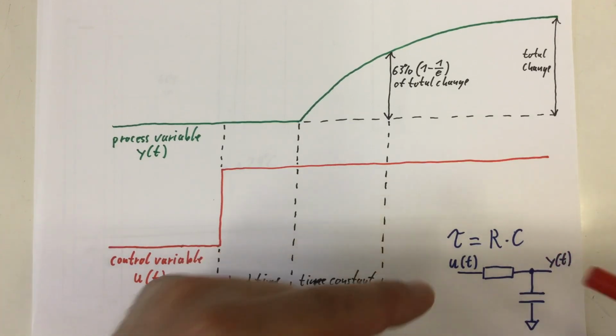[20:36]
And it's the time from when you apply to an RC element a sudden change in voltage until you see 63% of that change of voltage at the output. And then usually after, rule of thumb, 5 tau, you see at the output the complete change of voltage.
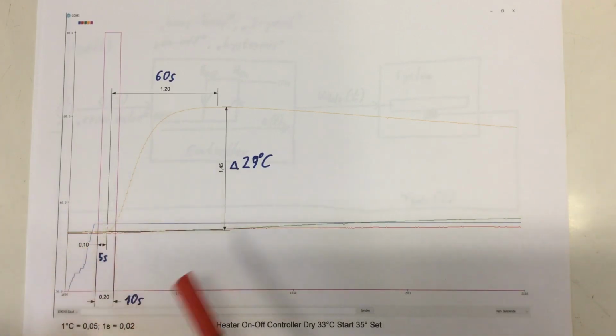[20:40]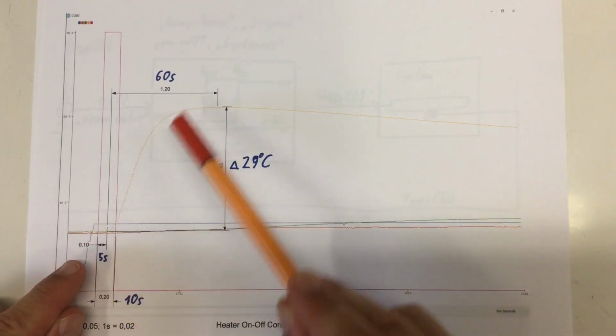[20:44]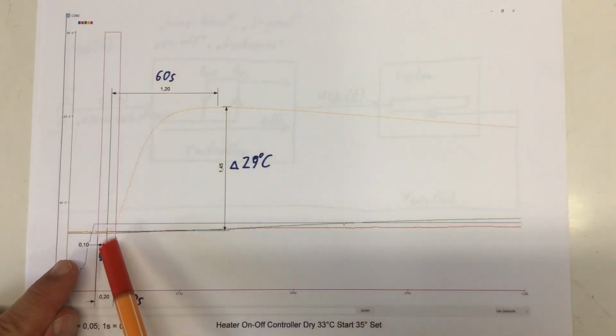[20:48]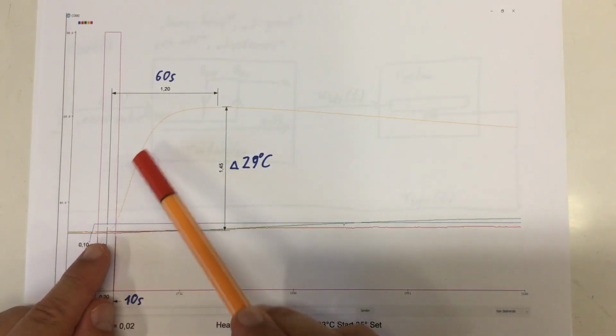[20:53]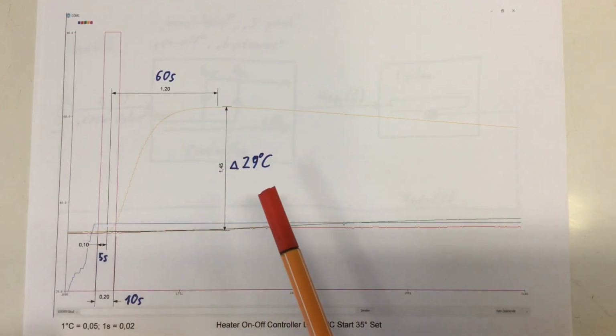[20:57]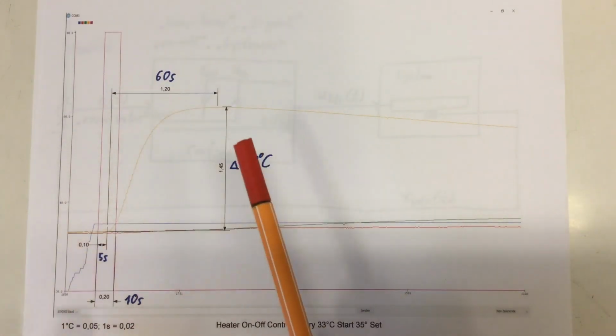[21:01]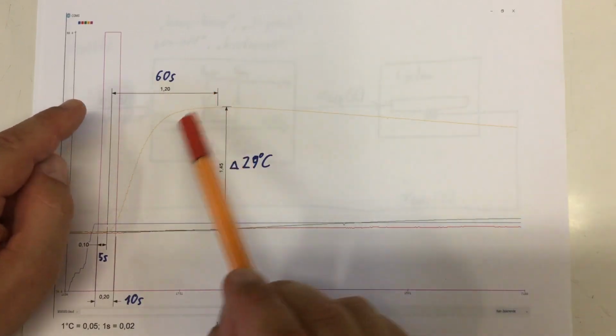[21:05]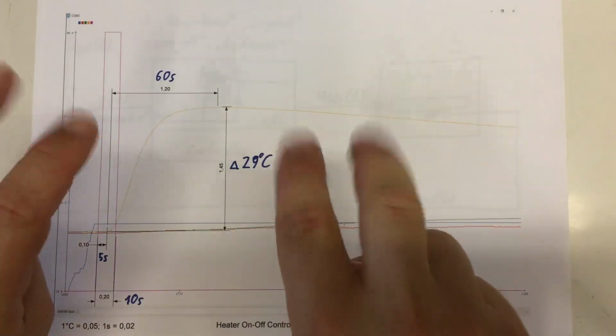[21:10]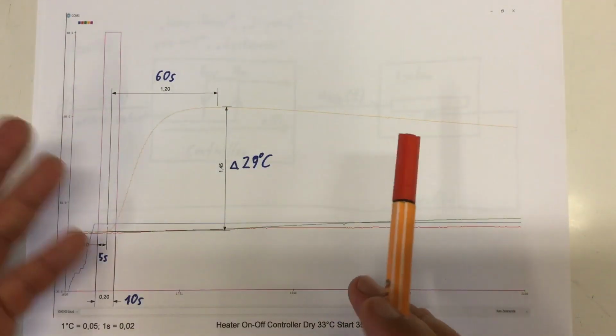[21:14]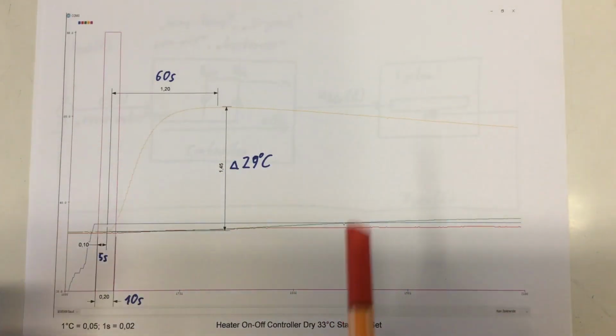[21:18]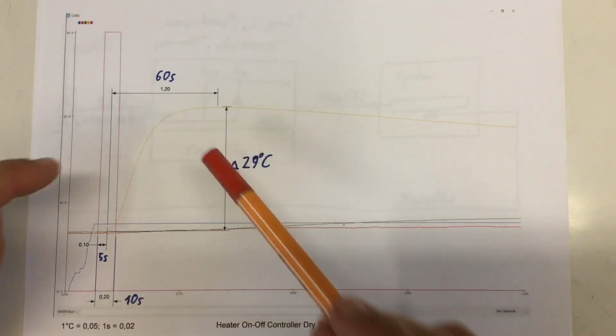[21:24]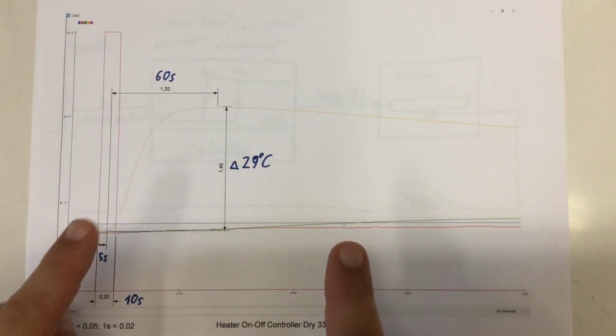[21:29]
We certainly have a dead time in our system, but I'm a wee bit ambivalent about tau, because our control variable is changing value again, going back to off long before we reach the top here. And so I'm just calling these 60 seconds from the end of the dead time until we reach our maximum value, the time until we reach our maximum temperature. And if there are some control theory enthusiasts out there, I'm looking forward to your feedback on terminology in that case. Anyway, let's have a look at the other runs.
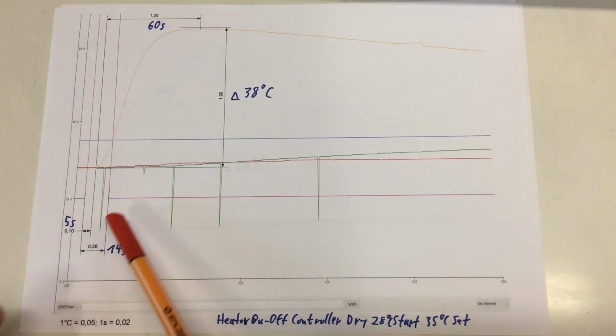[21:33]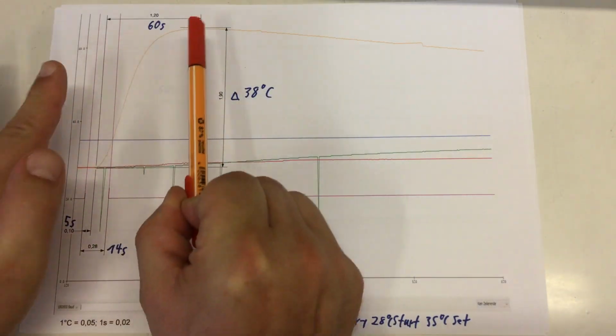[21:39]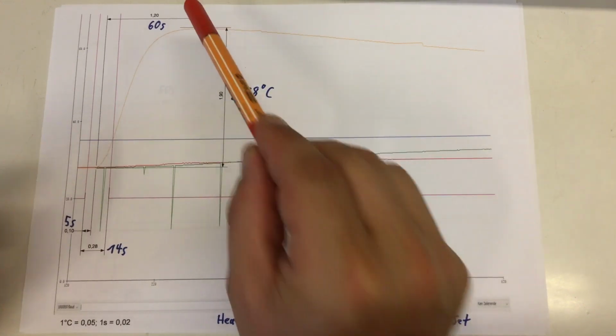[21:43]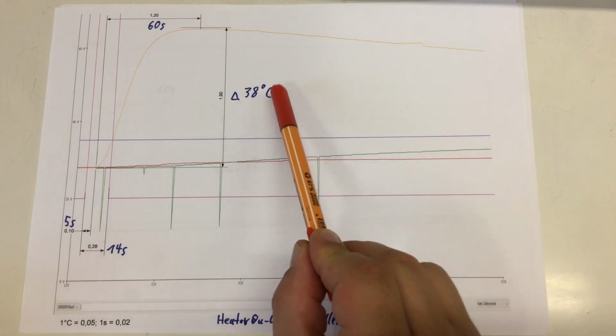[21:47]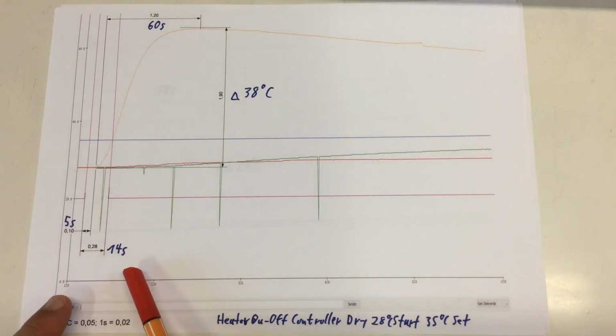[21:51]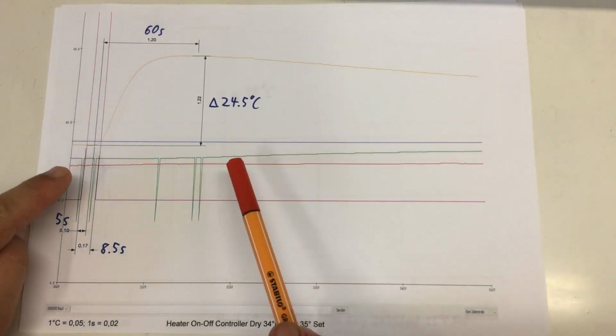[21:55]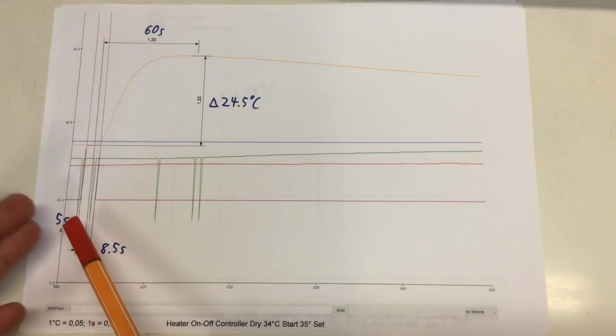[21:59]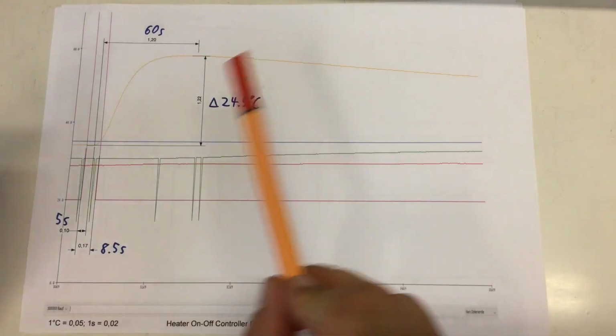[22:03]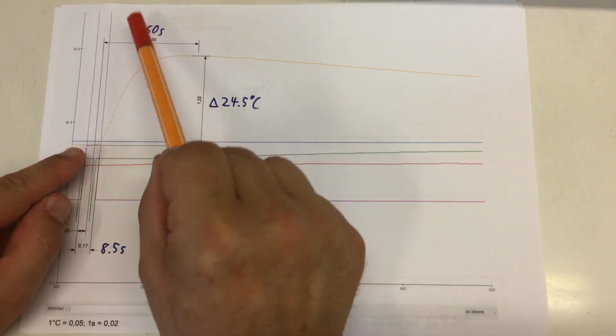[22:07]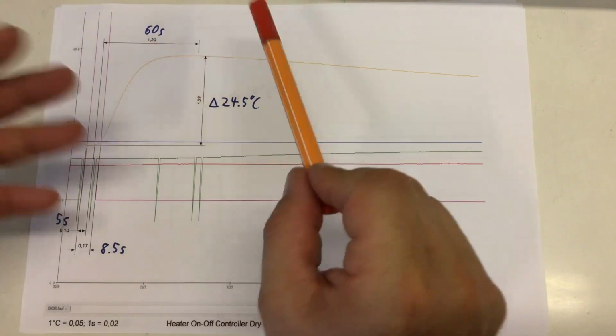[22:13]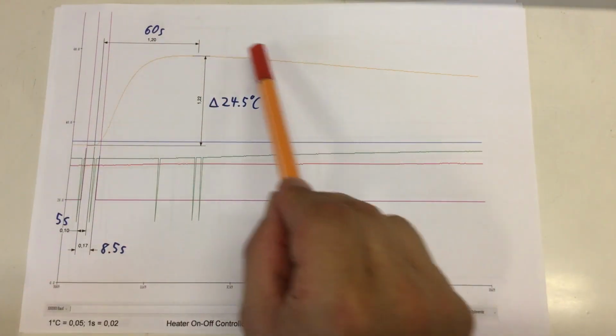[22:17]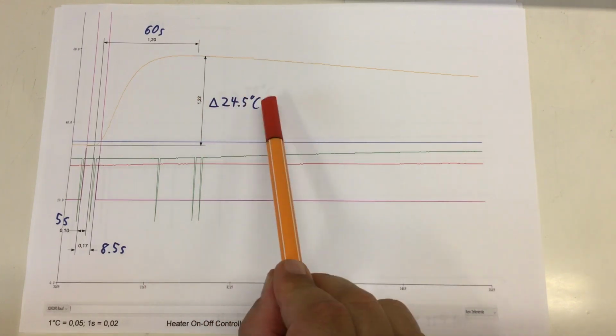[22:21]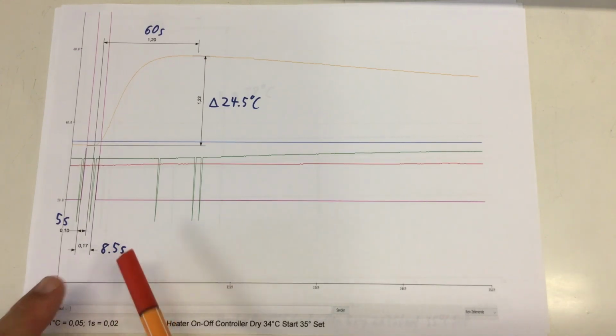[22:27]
On the second run, we got again a dead time of 5 seconds, and again it took about 60 seconds until we reached the maximum temperature. And this time we increased the temperature by 38 degrees C, and our heating element was on for about 14 seconds. On the third run, again, dead time 5 seconds. Again, approximately time until we reach maximum 60 seconds, maybe a wee bit shorter, 58, 55 seconds, but order of magnitude 60 seconds. Delta of temperature 24.5 degrees C, and our heating element was on for 8.5 seconds.
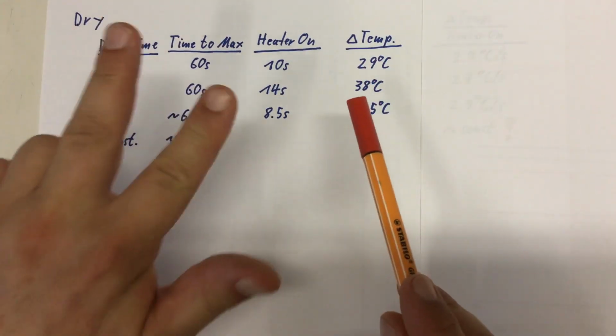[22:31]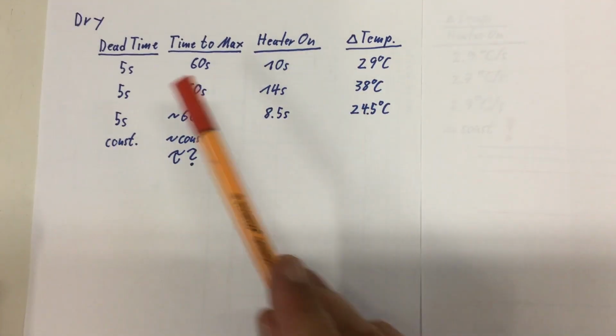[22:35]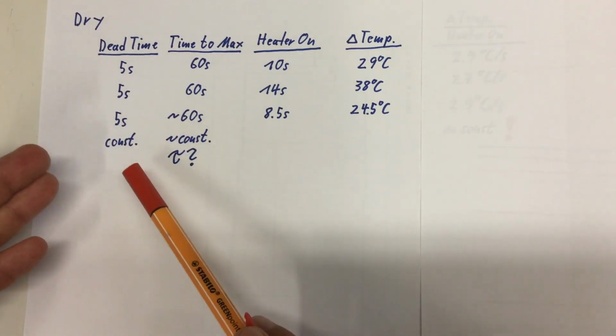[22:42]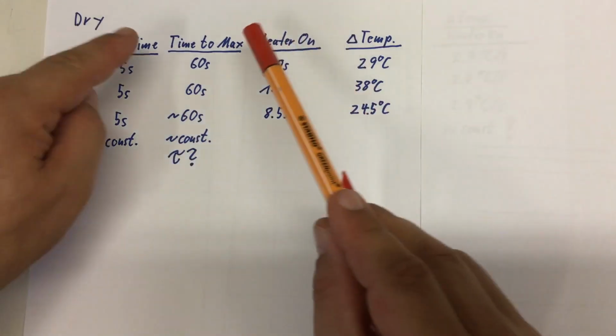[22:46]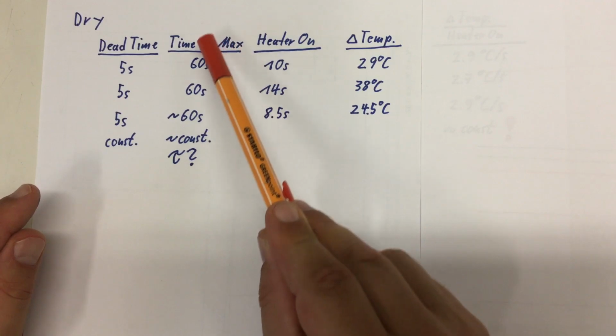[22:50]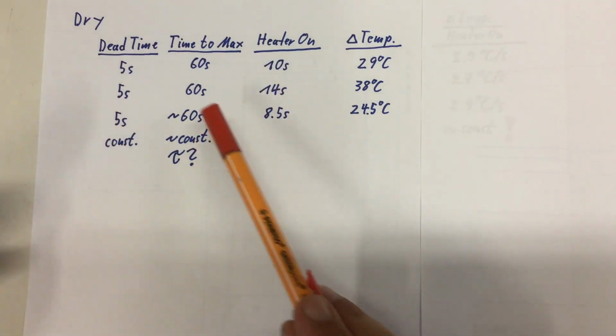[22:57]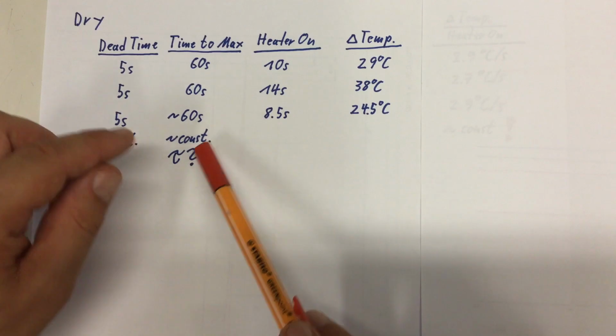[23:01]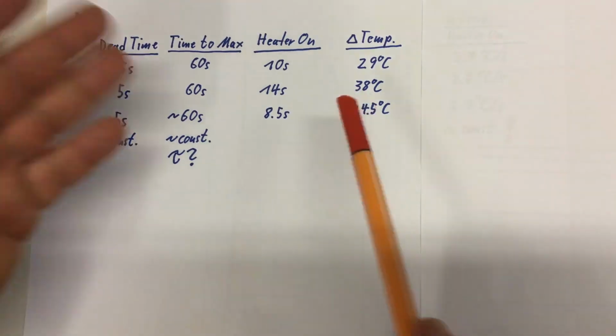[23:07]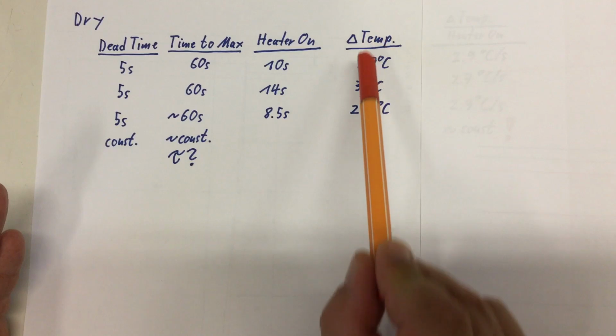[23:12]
If you look at the numbers of the first 3 runs, you can already see a pattern emerging. So the dead time was always 5 seconds, so that's obviously constant, independent from our starting temperature. The time until we reached the max temperature was also about 60 seconds every time. So in the third run it was a little bit shorter maybe, but it's almost constant. So tau question mark.
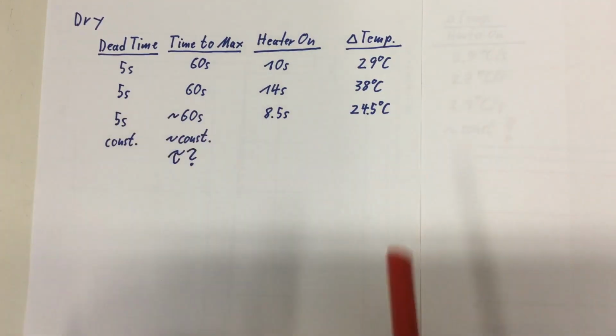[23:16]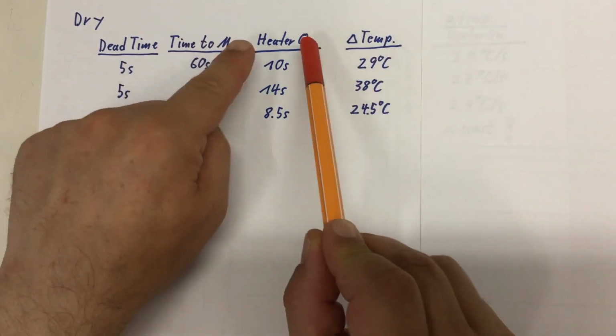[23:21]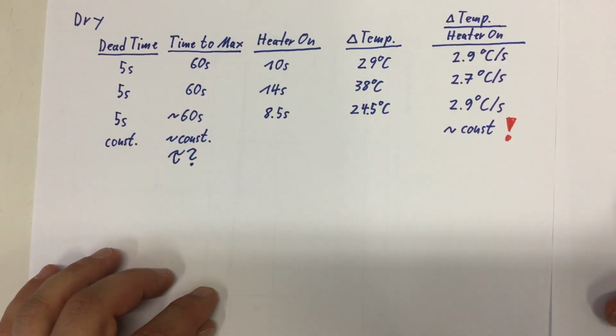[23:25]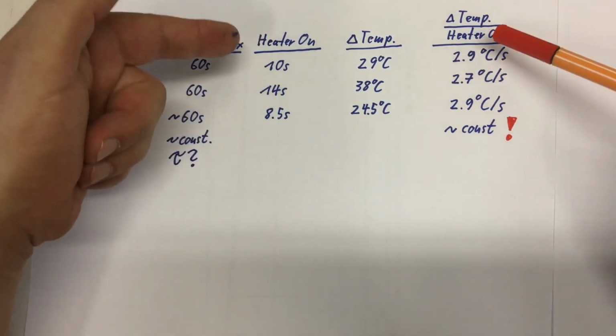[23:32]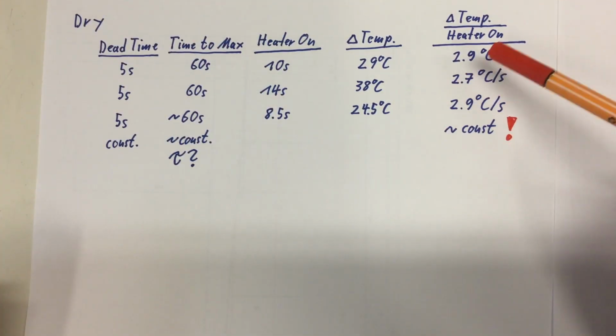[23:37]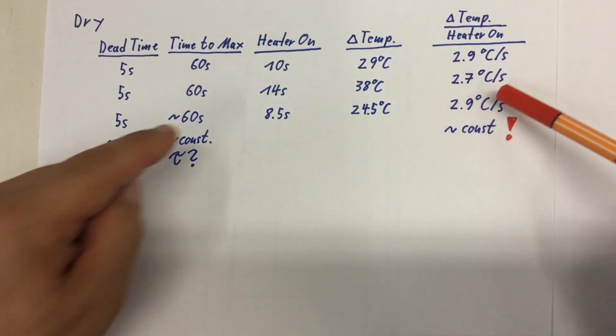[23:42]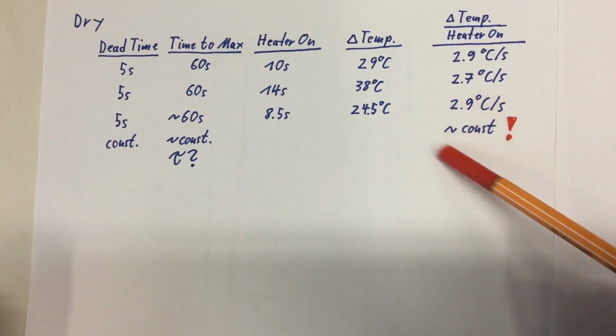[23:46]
Obviously our heater on times were different, as were our delta T's. But if we divide our delta T by the time the heater was on, we get these numbers. So first run, 2.9 degrees Celsius temperature rise for each second the heater was on. Second run, 2.7 degrees Celsius per second. Third run, 2.9 degrees Celsius per second. And that is pretty much constant.
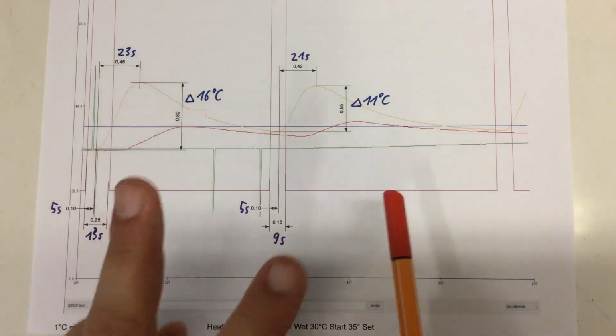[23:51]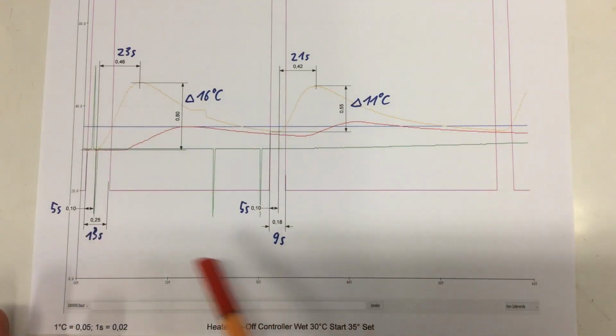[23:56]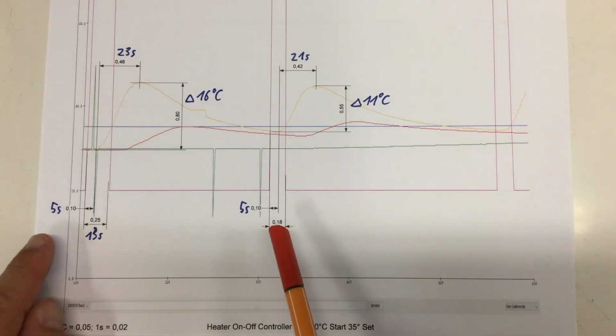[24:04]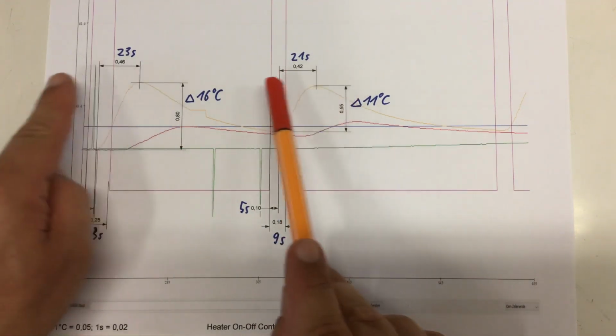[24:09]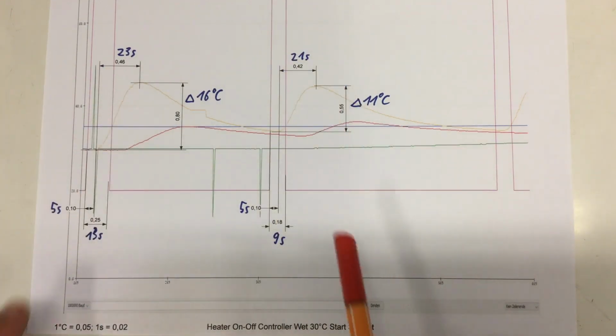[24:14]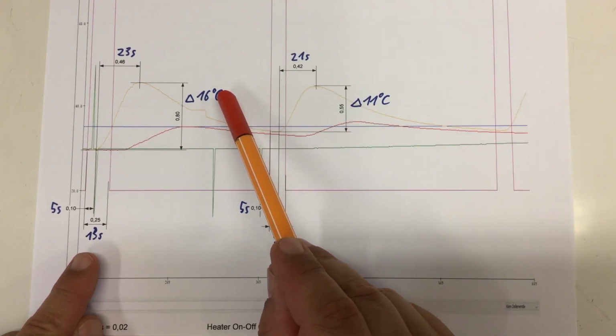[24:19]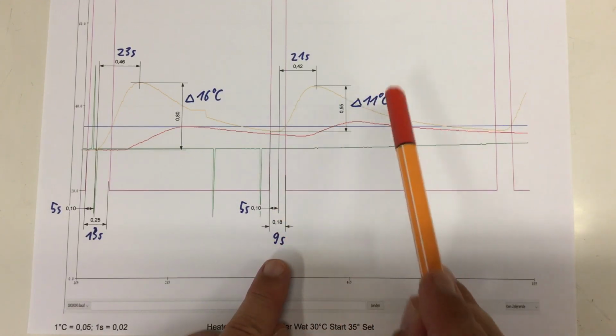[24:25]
Looking at the data from our 2 wet runs, with 1 liter of water in our water bath, we see very similar curves, but the numbers are a little bit different. Dead time is again, both times 5 seconds, but time to maximum is 23, respectively 21 seconds. And for 13 seconds of heater on, we get a temperature rise of 16 degrees. And for 9 seconds heater on, we get a temperature rise of 11 degrees Celsius.
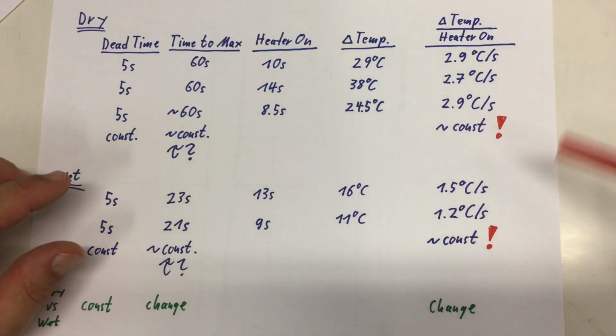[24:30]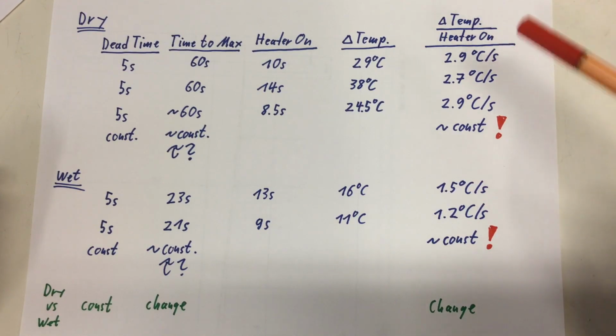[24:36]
Putting the numbers also in our table and just looking here at the temperature change per second heater on, we get for the first one wet 1.5 Celsius per second, and for the second one 1.2 Celsius per second. So also aboutish constant. Of course, that changed between wet and dry runs.
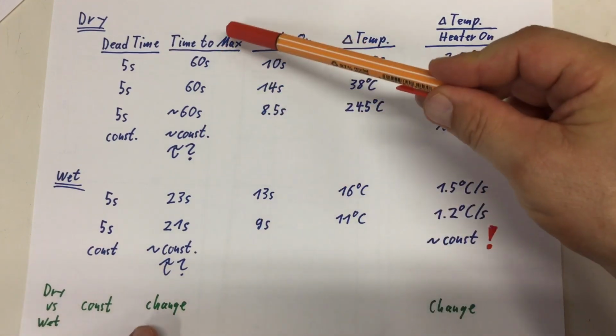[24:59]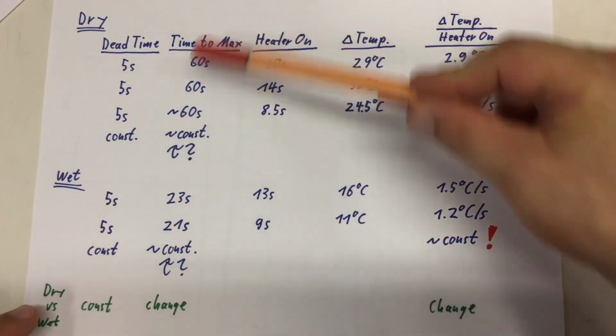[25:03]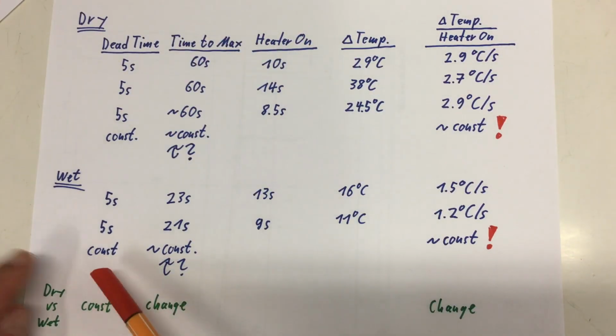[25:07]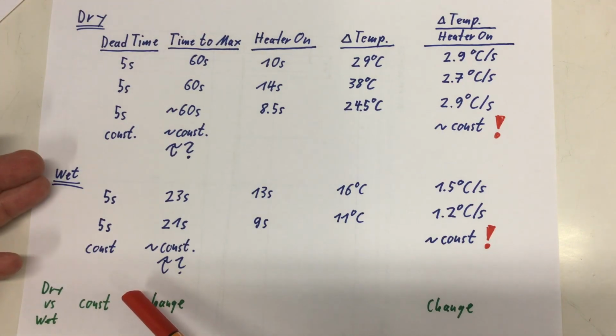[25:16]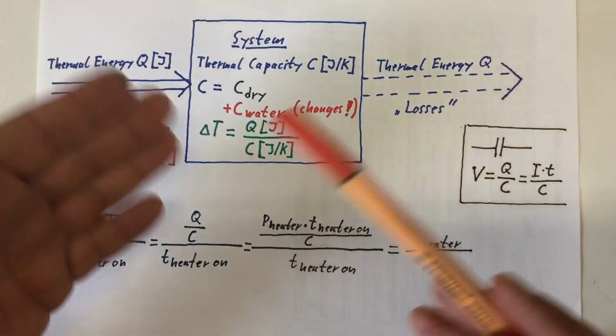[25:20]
Also the time to max, or time constant, also changed between wet and dry runs. But what's also absolutely constant is our dead time. Okay, it doesn't matter if we run that thing dry or if we run it wet. So, what can we learn from all that?
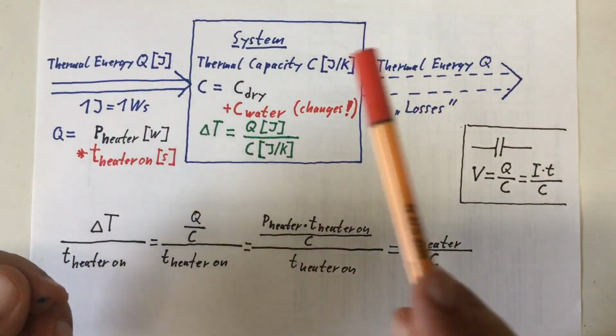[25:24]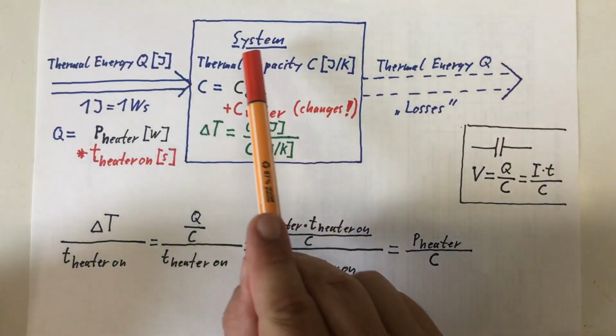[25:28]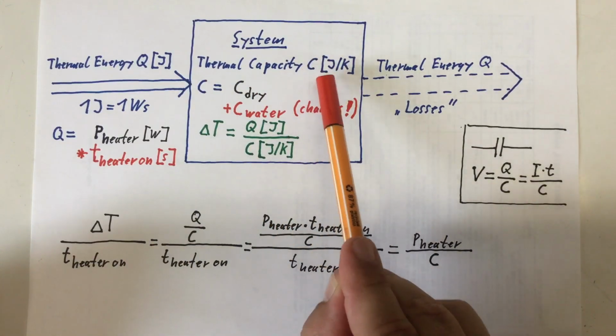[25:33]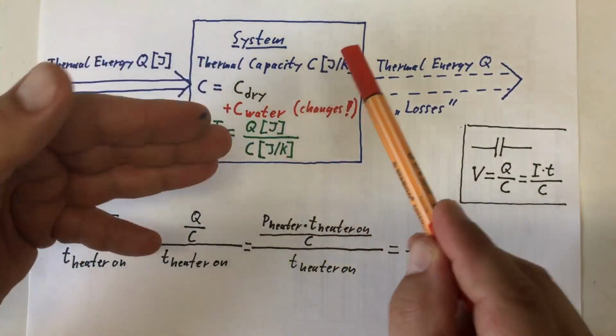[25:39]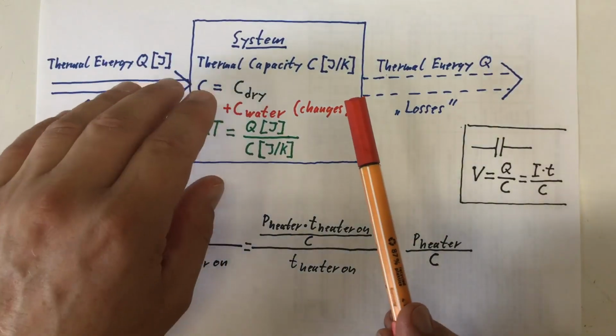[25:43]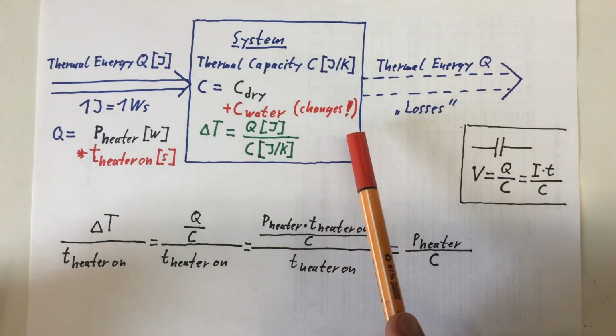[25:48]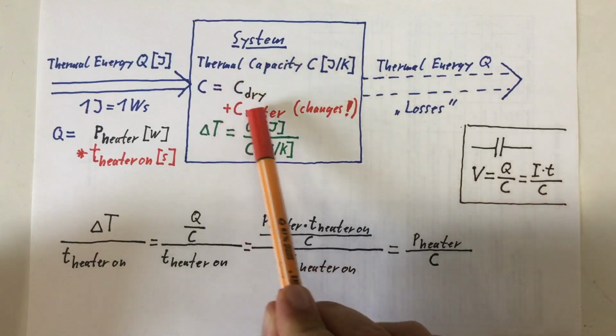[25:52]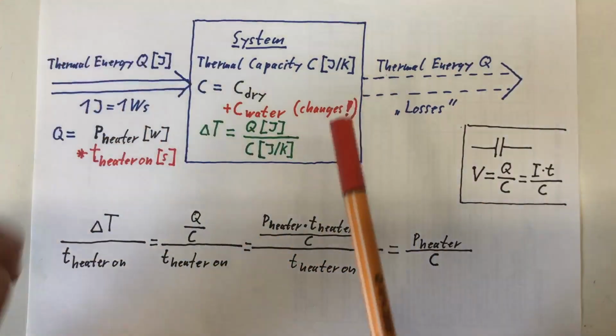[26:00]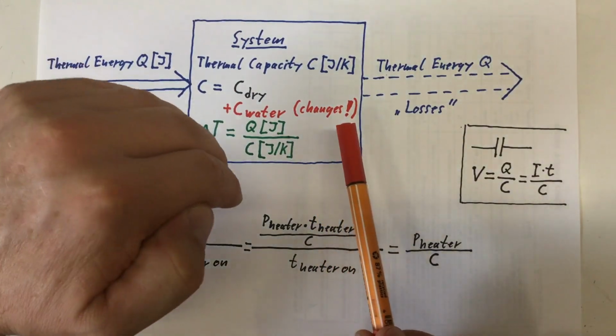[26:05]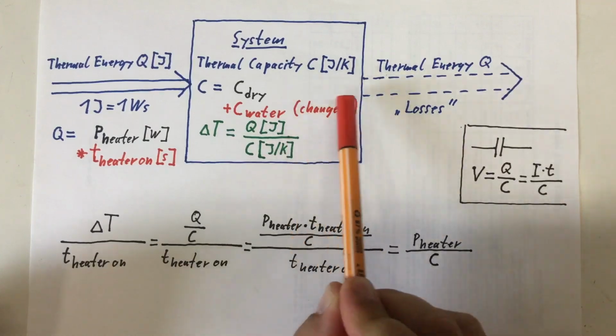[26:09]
And I have to make 2 points, and it will involve a little bit of math. So, first, our system has a thermal capacity, usually denominated as big C, and that's given in joules per Kelvin. And that's simply a measure for how much energy you have to put into a system to raise the temperature a certain amount. And the thermal capacity of our system obviously consists of the thermal capacity of the dry components, the metal, aluminium, stainless steel, whatever, plus the thermal capacity of the water we put in or we have in. And that, of course, changes over time.
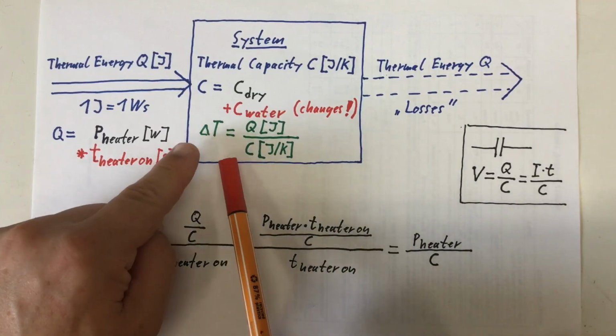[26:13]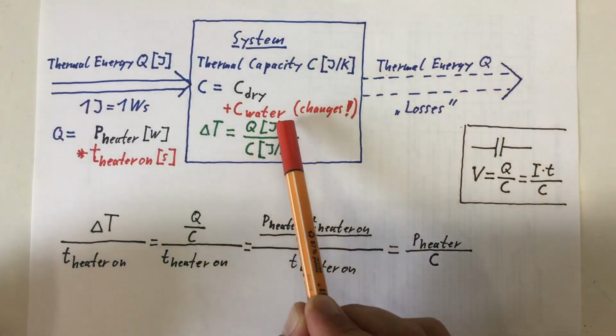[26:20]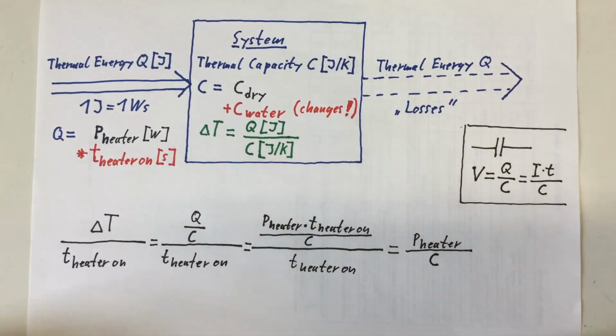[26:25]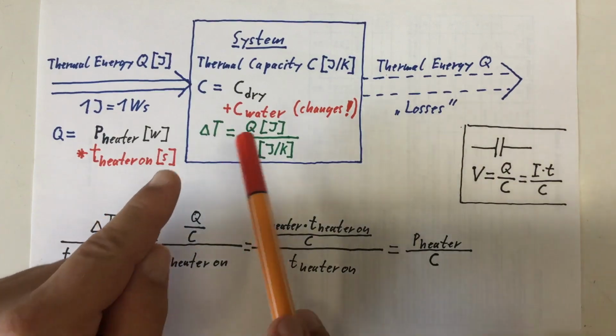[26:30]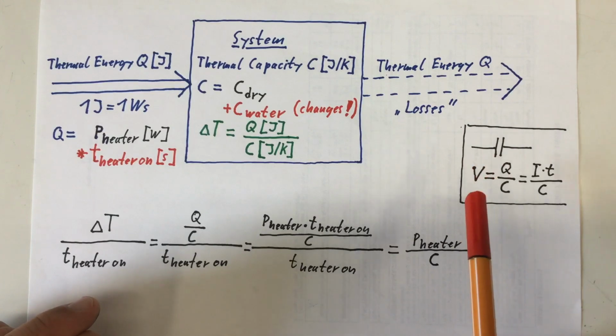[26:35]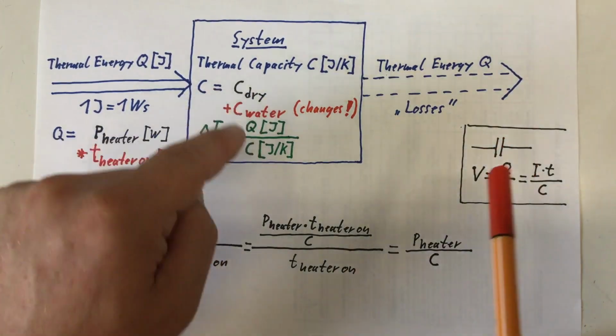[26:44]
And the temperature change for such a system is given as the energy we put in, joules, over the thermal capacity. And if you work with capacitors, you already know that formula. So the voltage across a capacitor is equal to the charge you put into a capacitor over the capacity of a capacitor. It's physics. It's always the same.
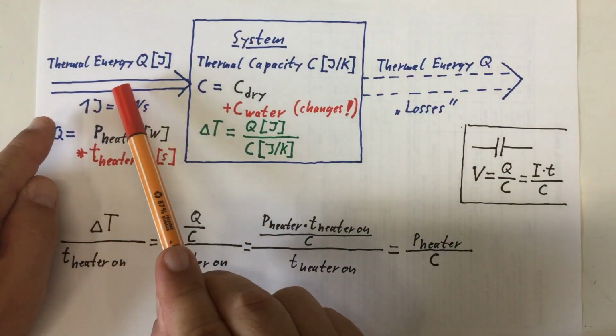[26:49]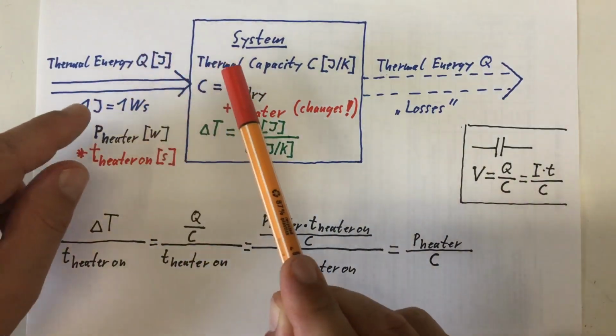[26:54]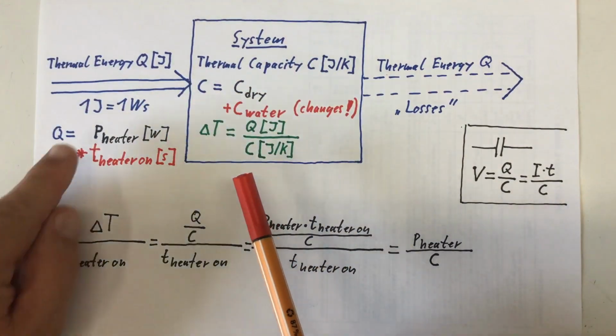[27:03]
Now, the thermal energy Q we put into our system, given in joules, comes, of course, from our heater, or the heating elements in our heater. And fortunately for us who mostly dabble in electronics, 1 joule is 1 watt second. Not kilowatt hours, but watt seconds. And so the Q we put into our system is the power of our heater in watts times the time our heater was on in seconds.
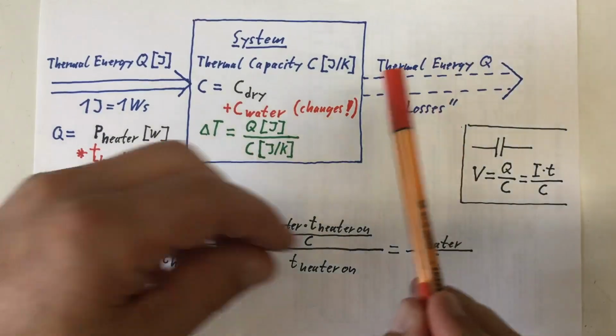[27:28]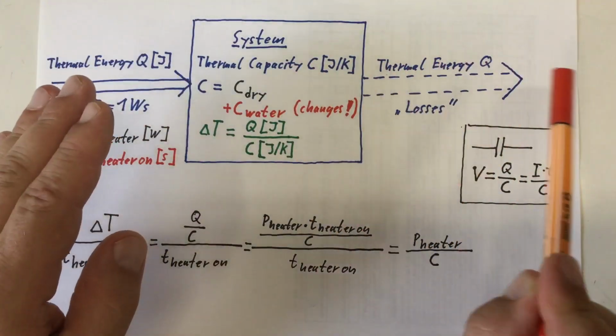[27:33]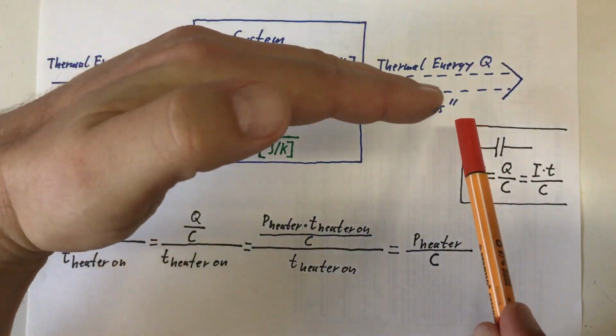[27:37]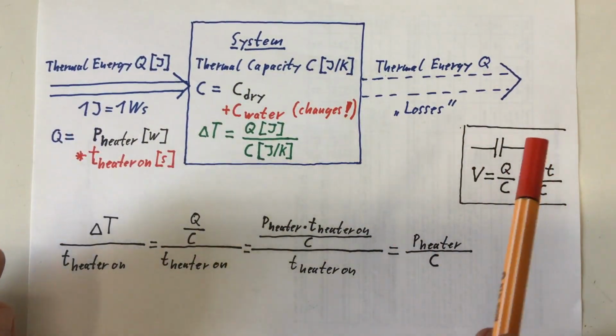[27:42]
That's it. Of course, we have some thermal losses to the environment. The temperature, or the energy, is slowly bleeding away. We saw that as the system cooled down very slowly. Again, the analogy to our capacitor: our electric charge Q is equal to the current I times the time T the current flows. So I is our power, and T is our T.
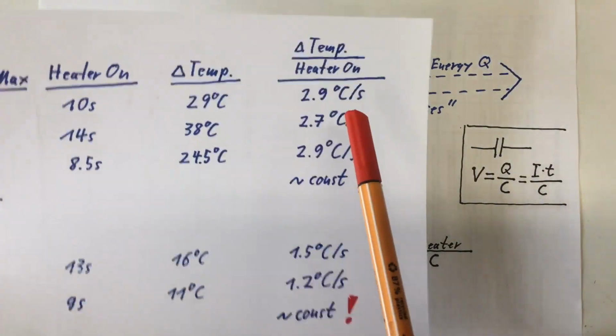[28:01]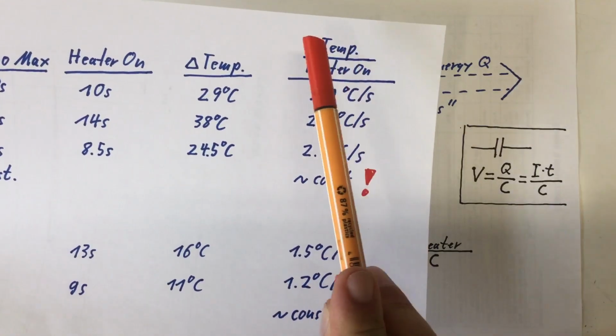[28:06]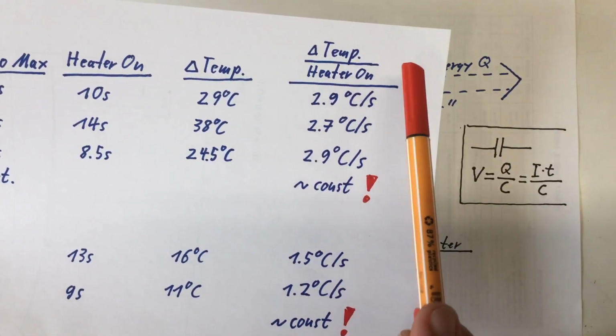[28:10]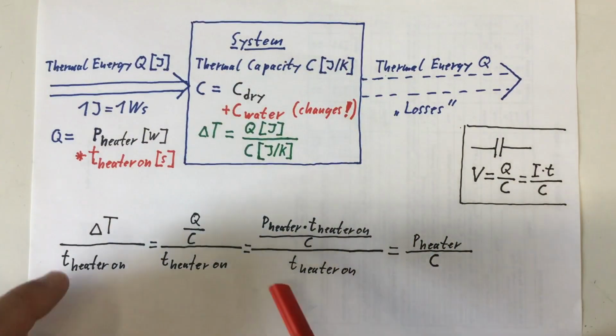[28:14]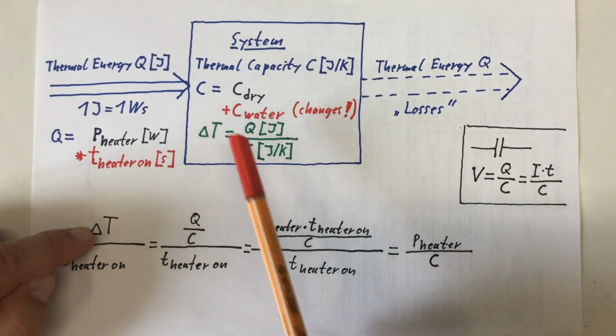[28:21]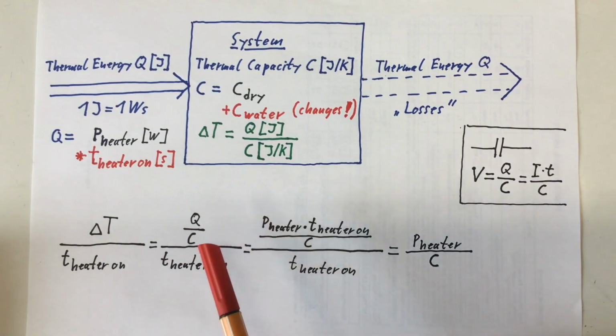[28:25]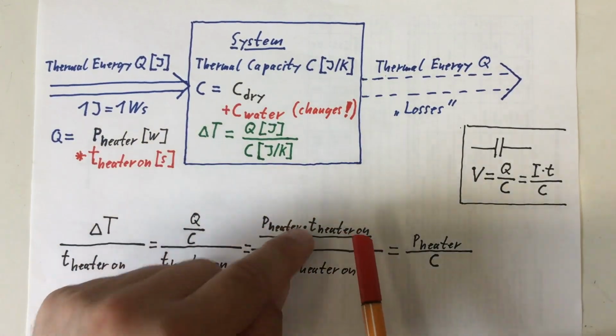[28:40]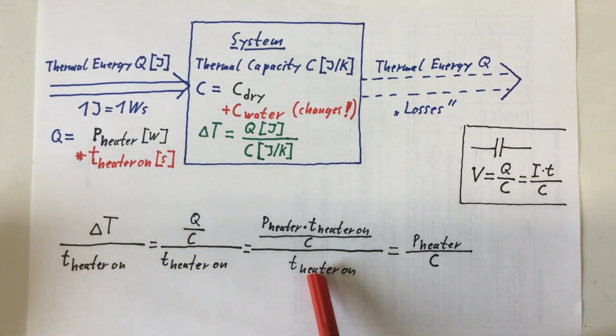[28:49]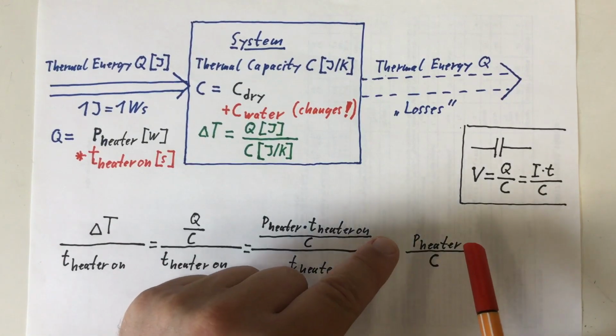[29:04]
Now, in the end, we measured and calculated that delta temperature, so delta big T, over the time the heater was on. And if we now put all that math to it, we see that delta T over T heater on is equal to the energy we put into the system divided by the thermal capacity, over the time the heater was on. And our energy we put in is equal to the power of our heater times the time the heater was on, over our thermal capacity, divided by the time the heater was on. And we can drop that, and this leaves us with the thing we measured, which is really the power of the heater over the thermal capacity of the system.
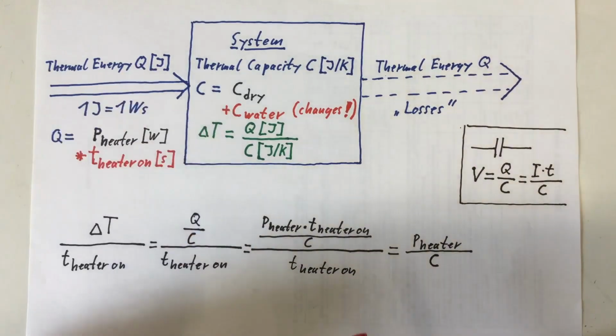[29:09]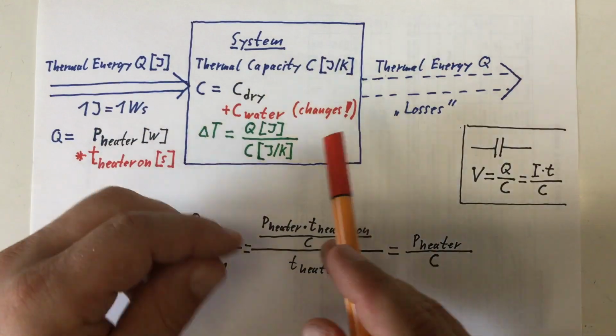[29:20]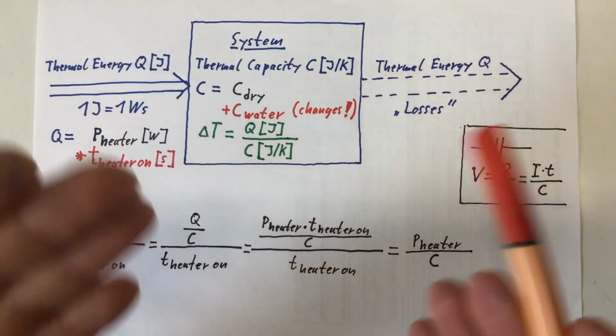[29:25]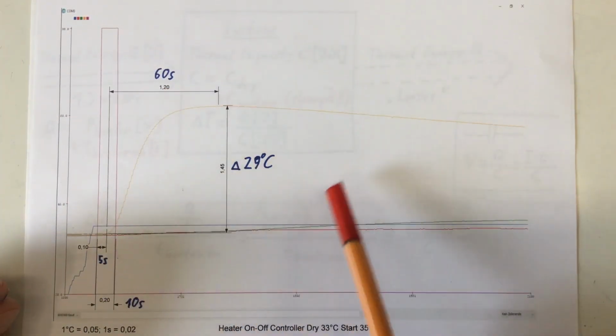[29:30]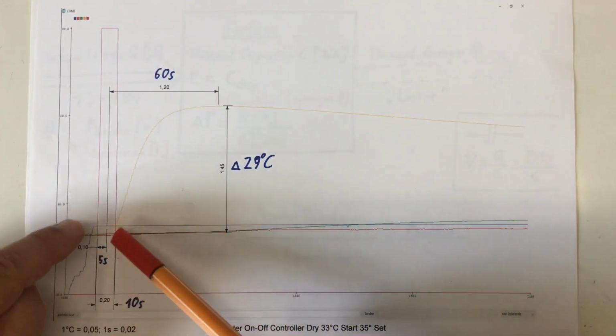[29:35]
So basically, in automotive terms, horsepower per pound of vehicle weight, or more scientifically, kilowatts of motor power over kilograms of vehicle weight. So the power to weight ratio. Now, that explained nicely how our total temperature change relates to the heater on time. But what about the development of the temperature over time?
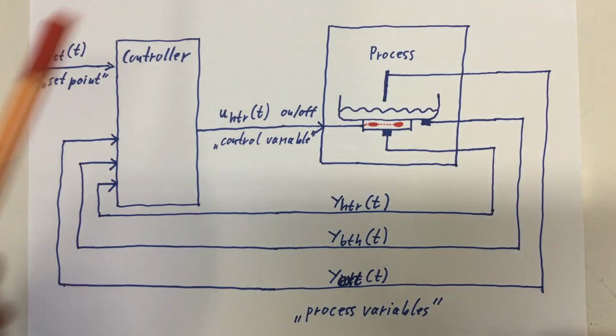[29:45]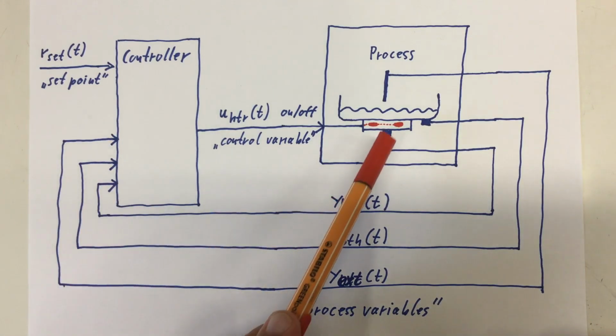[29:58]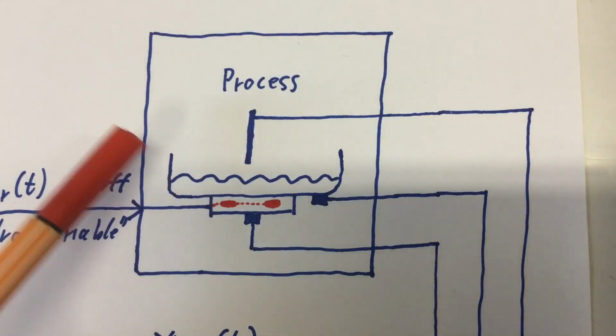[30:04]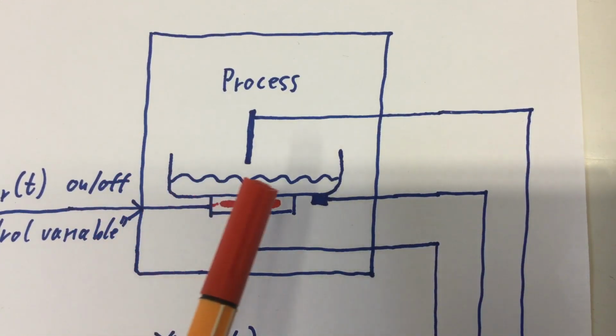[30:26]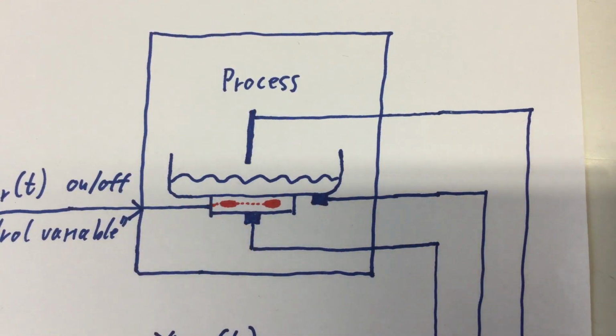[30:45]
To explain that, let's go back for a second to this overview picture from the beginning, where we have our process and the control variable, heater on off, goes in, and we're currently just using one of the process variables, the heater temperature, coming out. And I refined the process picture a little bit because in reality our heating elements are really just two tiny bundles of wires or something that are embedded in a block of aluminium, and that's where we generate the heat. That's what's really heating up. And everything around it, the stainless steel bath, the water, the aluminium itself, that's all thermal mass. And in the end, we are measuring the temperature of that aluminium here, not of the heating elements themselves.
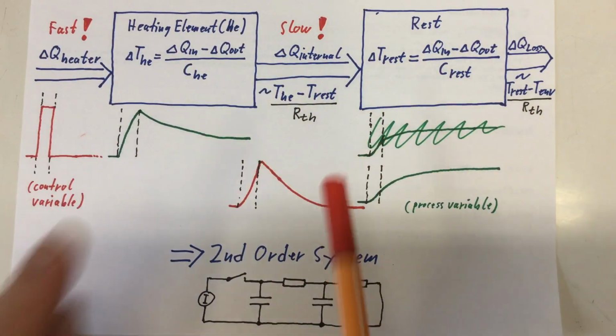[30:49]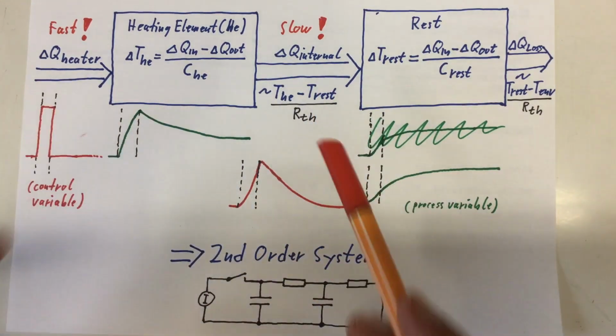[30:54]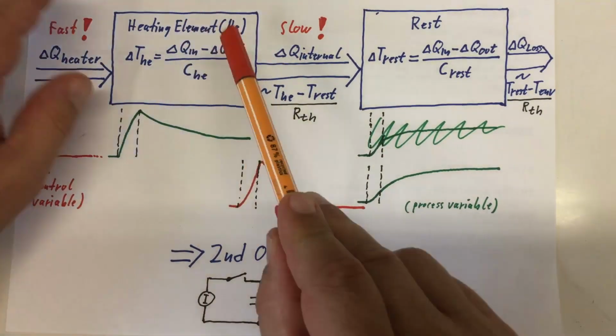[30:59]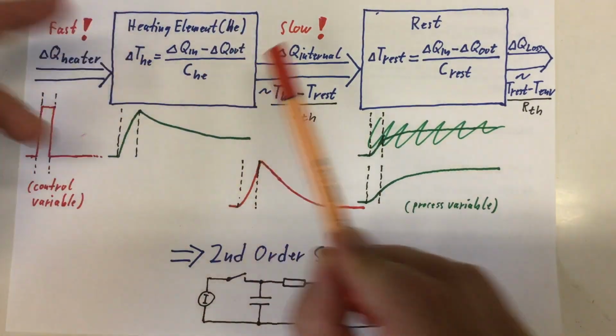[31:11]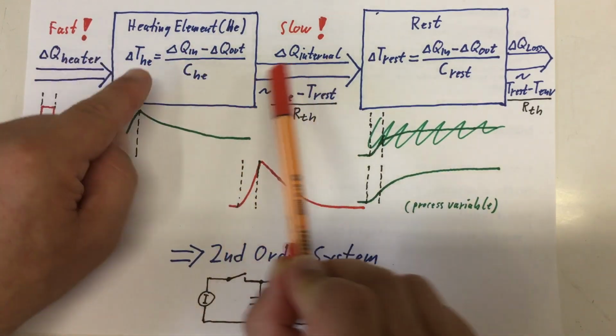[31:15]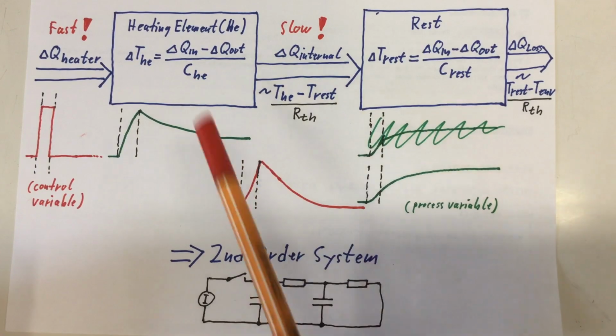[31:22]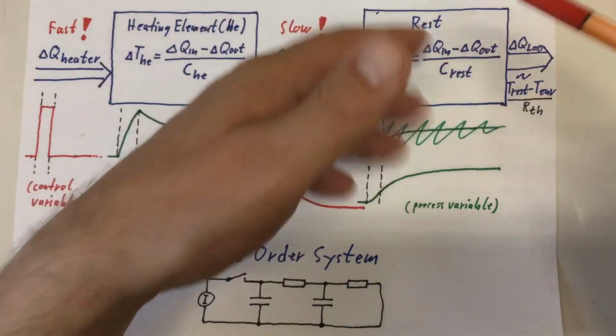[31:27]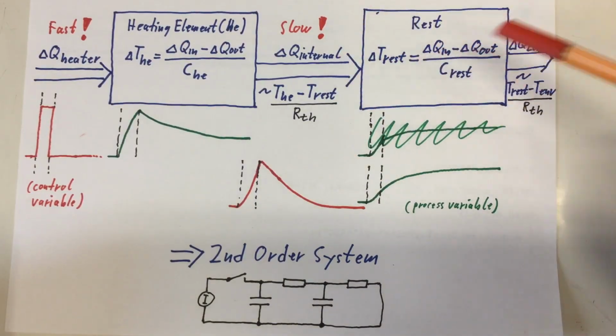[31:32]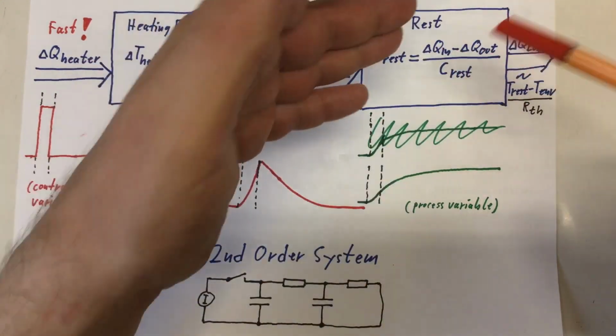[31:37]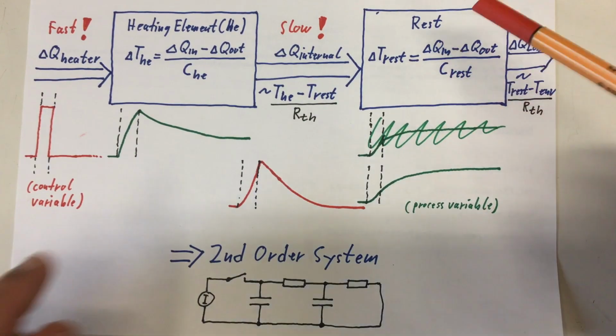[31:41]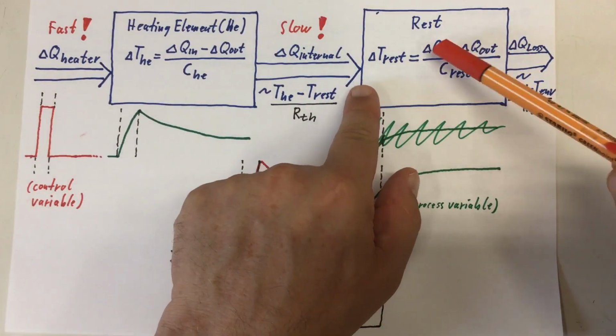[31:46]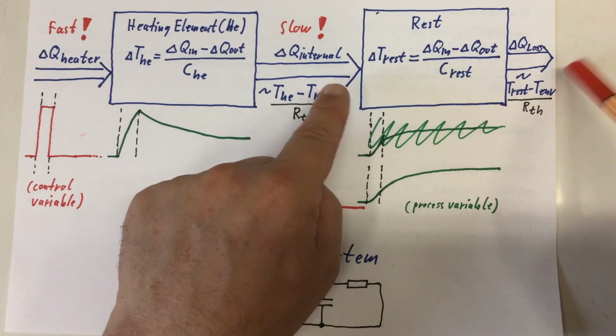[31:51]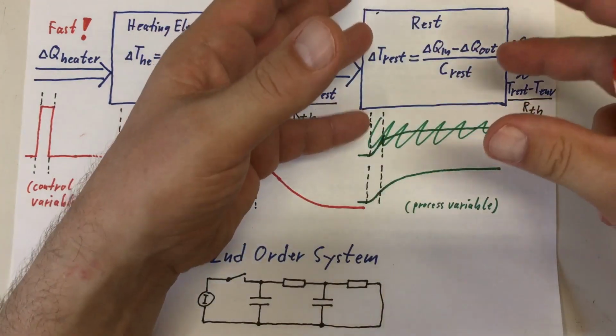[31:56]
And keeping that picture in mind, more math. But I did my best to keep differential equations out of the equation. So we have our heating elements, and they have a thermal capacity C_HE for heating element. And you already know the formula, so the temperature change of these heating elements is equal to what energy goes in the heating elements and what energy goes out of the heating elements, over their thermal capacity. And then we have the rest of the laboratory water bath, all the metal, the water, the aluminium. And same formula, so the temperature change of the rest of our water bath, where our sensor is connected, that's the process variable we are really measuring, is the same: energy going in minus energy going out, we're losing some energy at some point, over the thermal capacity of that whole shebang.
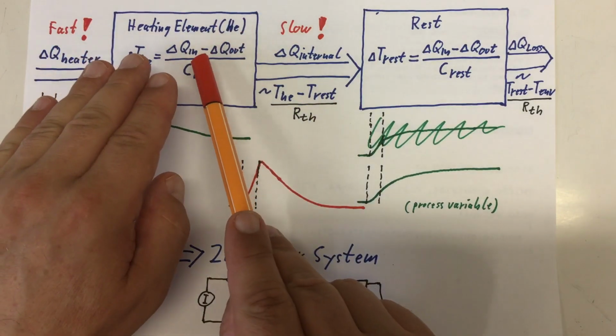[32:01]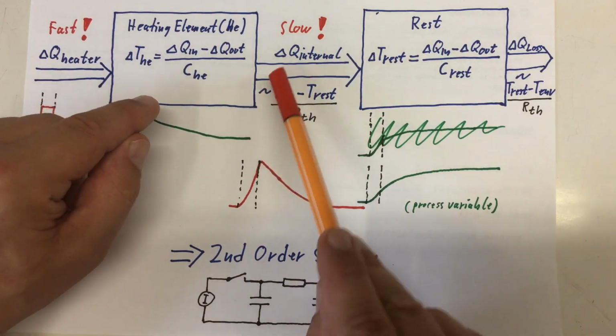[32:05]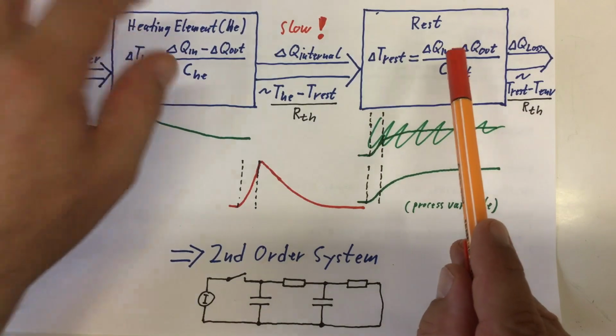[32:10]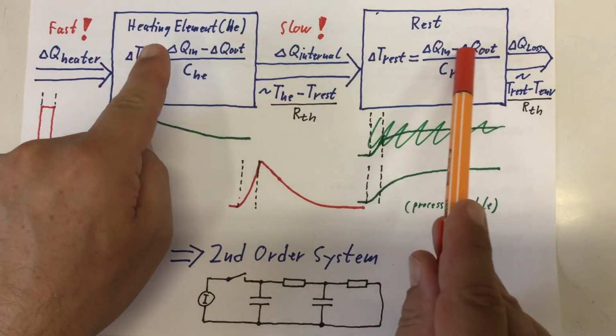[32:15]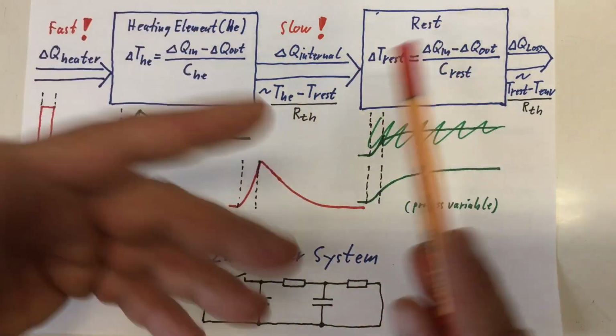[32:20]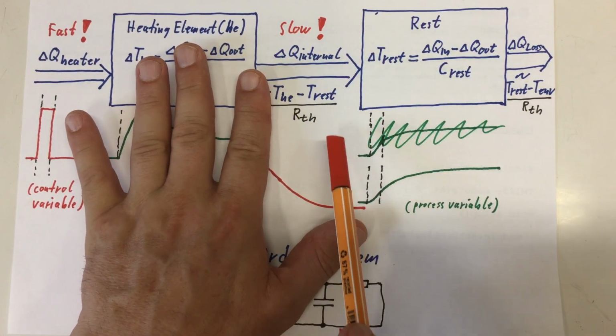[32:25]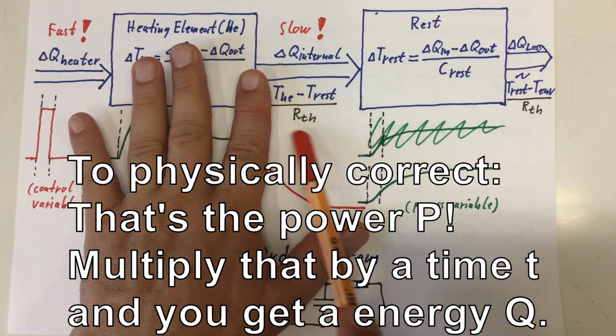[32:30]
Now, how fast is energy flowing from the heating element into the rest of our system? And that's basically proportional to the temperature differential between our heating element and the rest. The greater the temperature difference, the higher the energy flow. Or if you ever calculated heat sinks, the energy flow is basically the temperature differential divided by the thermal resistance between the two.
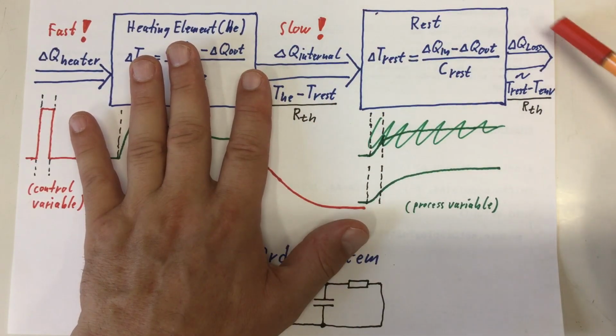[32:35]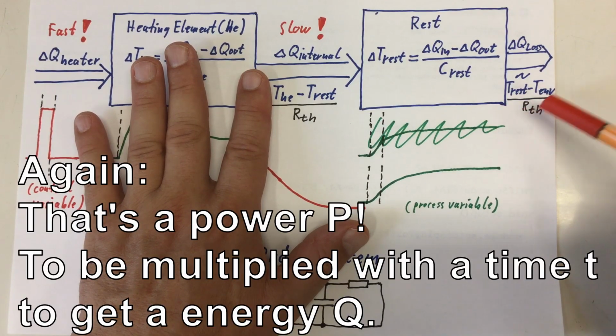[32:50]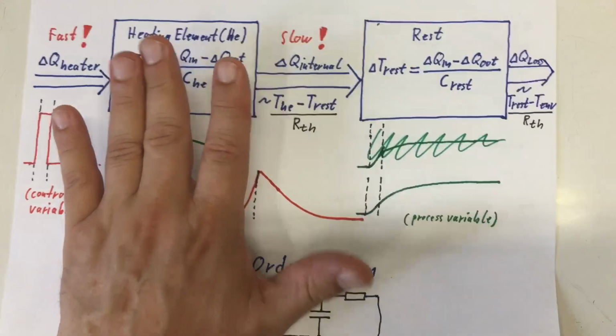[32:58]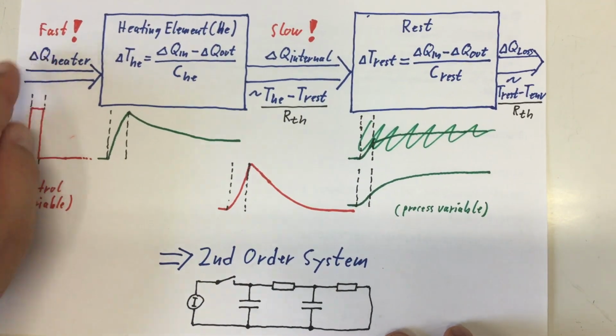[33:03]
And of course, that is also true for the losses that flow out. That's the temperature of our rest minus the temperature of the environment, so the air around it, over the thermal resistance that we have between our complete laboratory water bath and the environment. Now, how fast is energy going into our heating element? Well, that's pretty constant because our heating elements have a certain power, 200 or 300 watts, something around that. And that's going in here for the time we have the heater on.
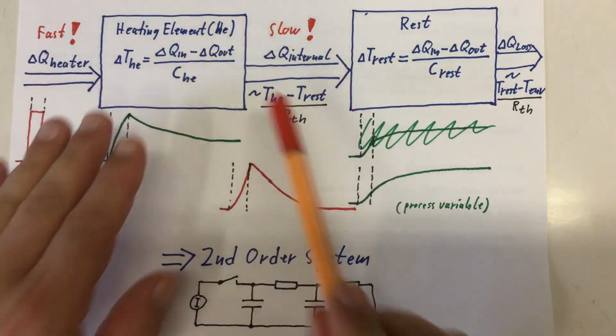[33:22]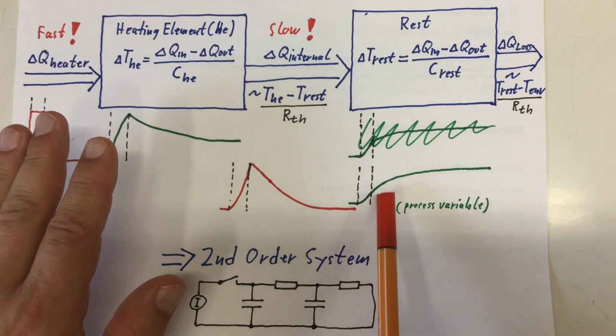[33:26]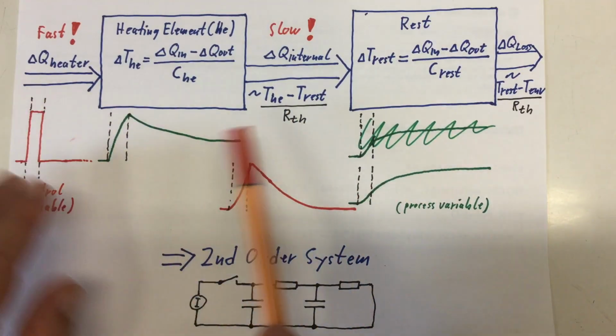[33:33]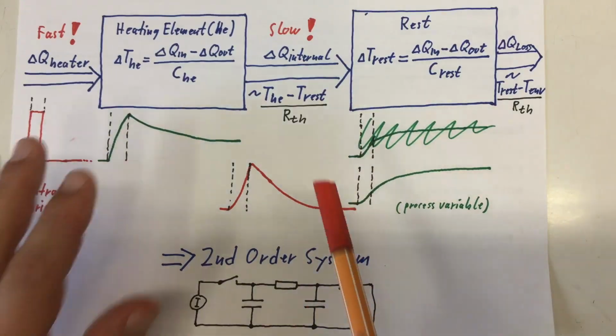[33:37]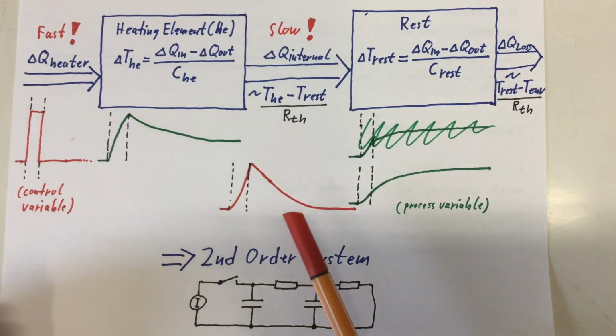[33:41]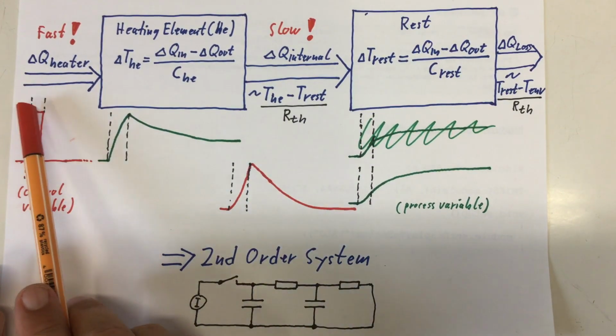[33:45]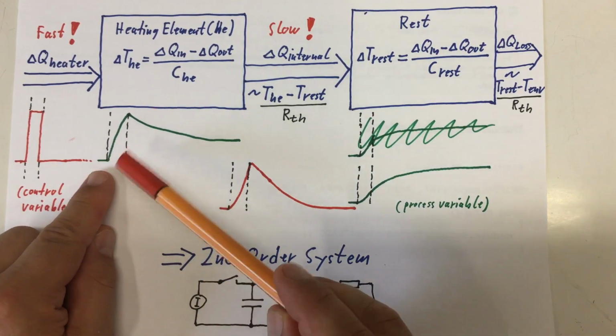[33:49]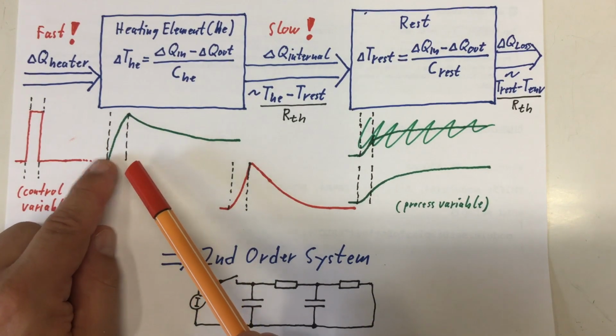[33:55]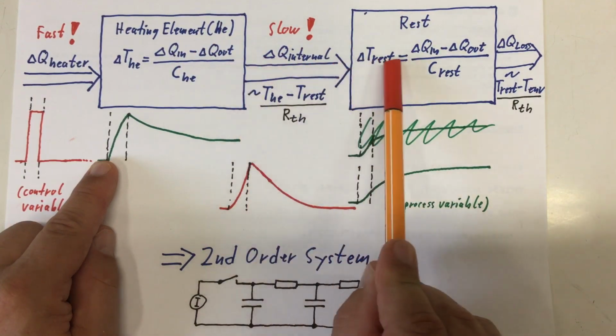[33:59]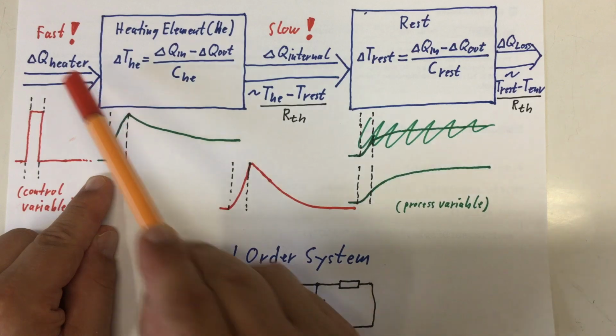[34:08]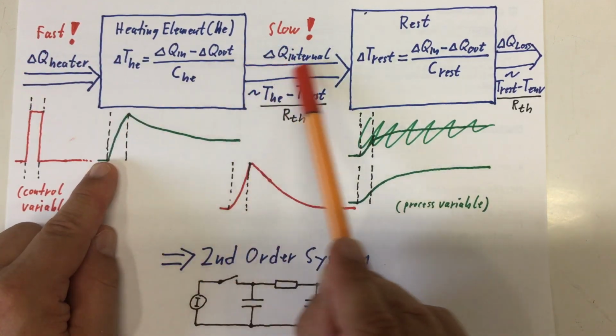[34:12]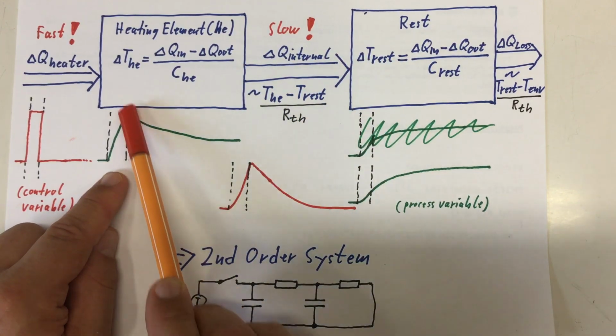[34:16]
With that model, we can explain how our process variable, the temperature we are measuring, develops over time. And please note the curves I scribbled down here are not to scale and probably not mathematically correct, okay? But just as a visual aid. So when we turn on the heater for a few seconds, the temperature of the heating element is first rising very steep and then a little less steep, because in the very beginning we have the same temperature here and here. So no energy is flowing from the heating element into the rest. But as the heating element is heating up, as we have the heater on, energy starts to flow, more and more energy, until we switch the heater off again.
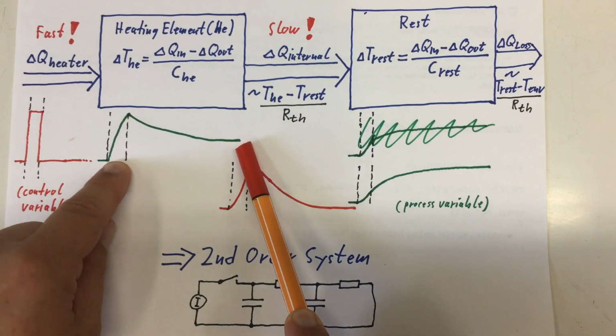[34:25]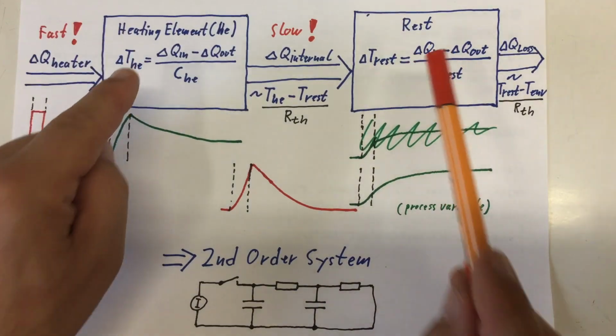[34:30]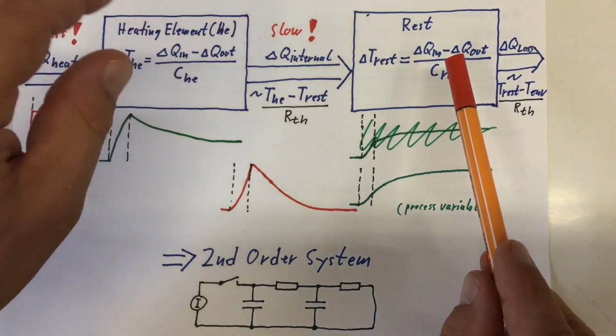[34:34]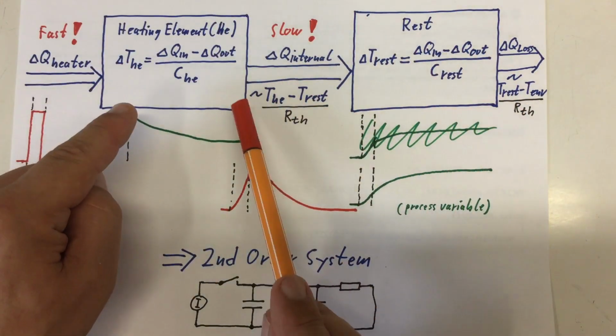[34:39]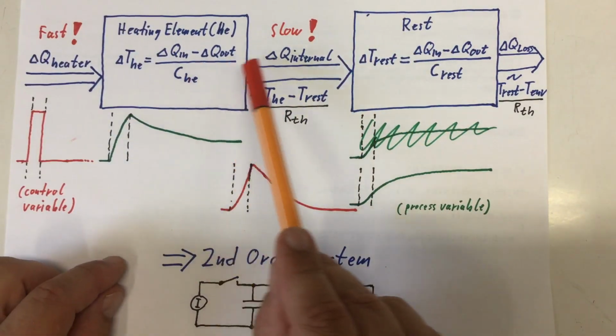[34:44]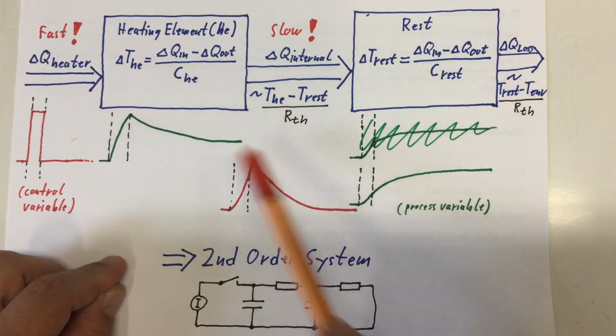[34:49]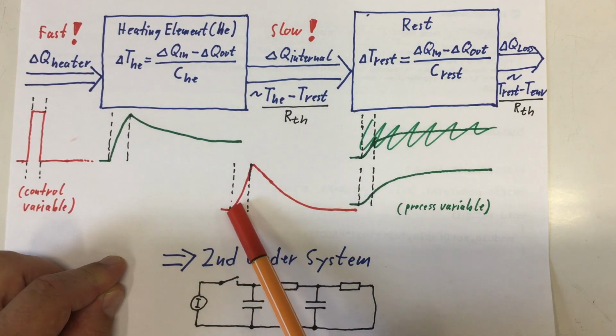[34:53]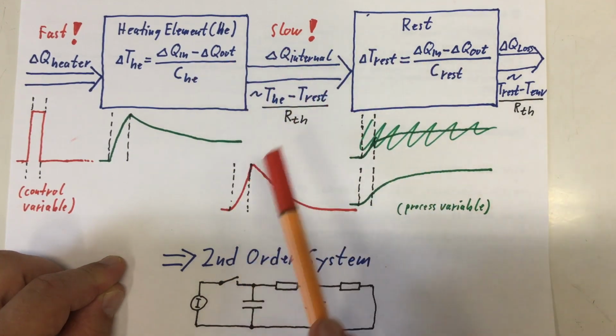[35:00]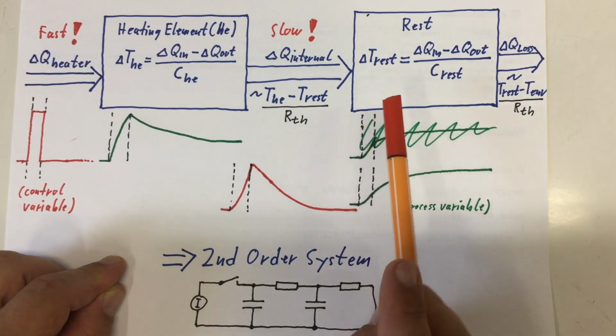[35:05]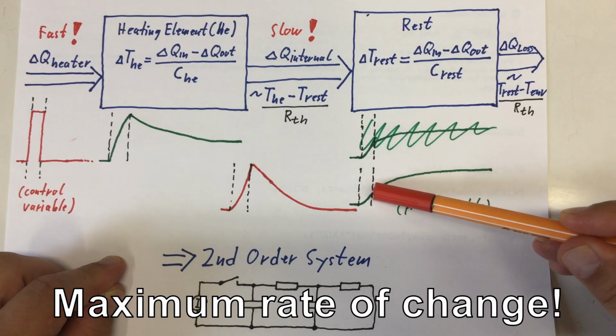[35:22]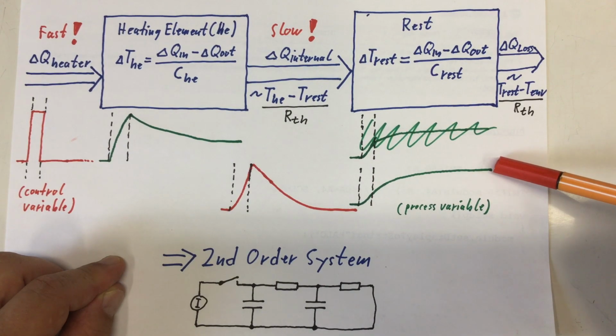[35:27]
And then the energy flow reduces itself slowly over time, because the temperature differential between the two becomes less and less as the heating element cools again and the rest is heating up. And at some point, we have equilibrium again. So the energy flow between the heating element and the rest behaves quite similar. At the beginning we have no energy flow, and that is rising as the temperature differential is rising, and then it's going slowly down again as the temperature differential is going back to zero. And in effect, we get the temperature curve for the rest. So starting slowly, then going to a maximum, and then flattening out again until we reach our equilibrium again.
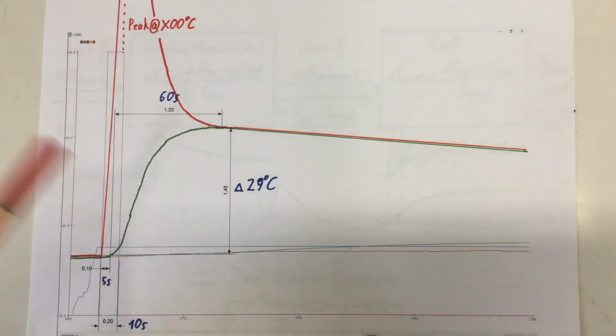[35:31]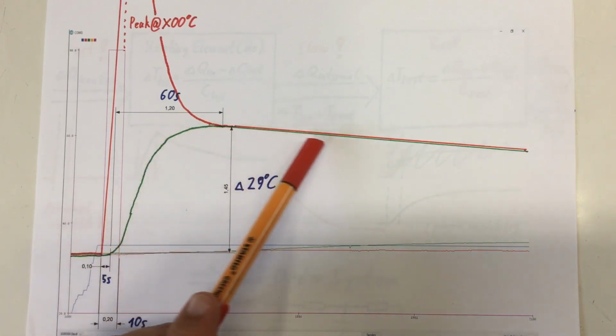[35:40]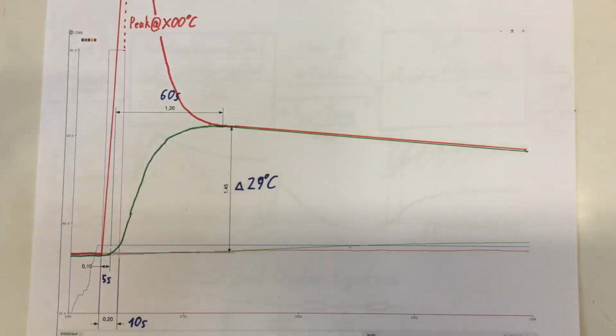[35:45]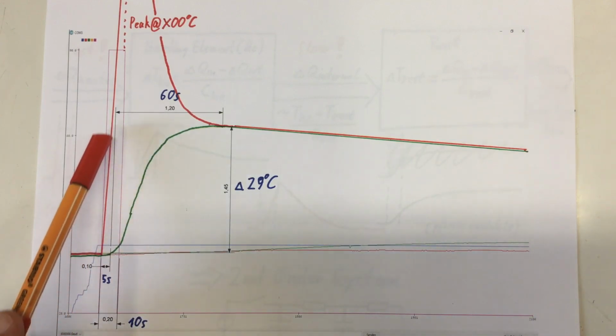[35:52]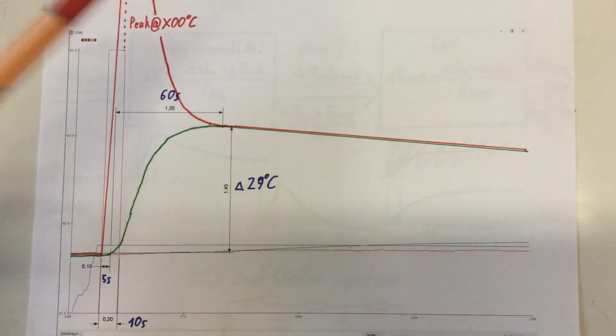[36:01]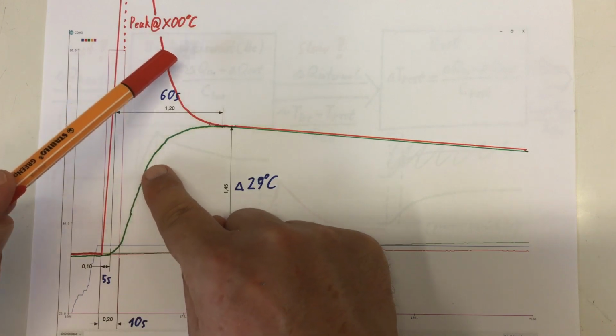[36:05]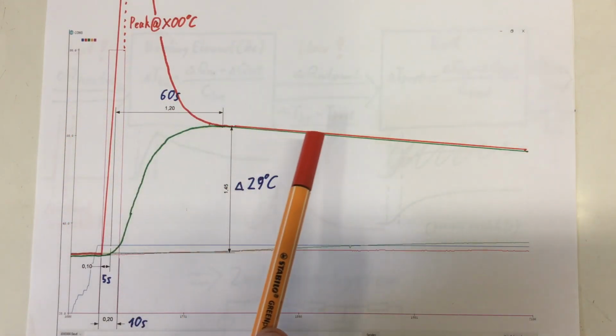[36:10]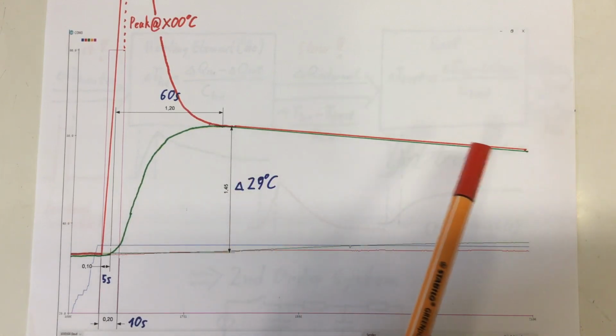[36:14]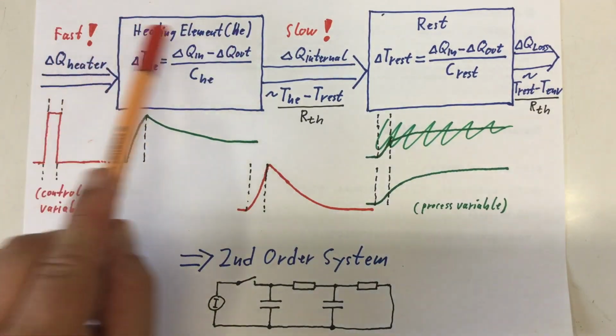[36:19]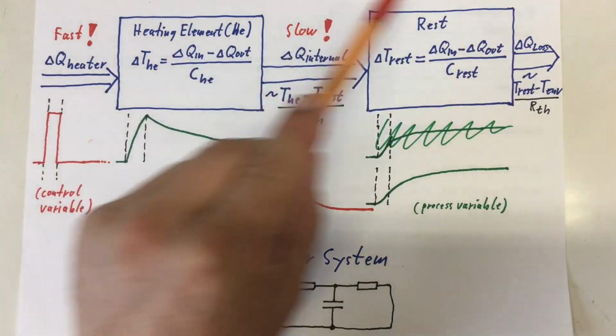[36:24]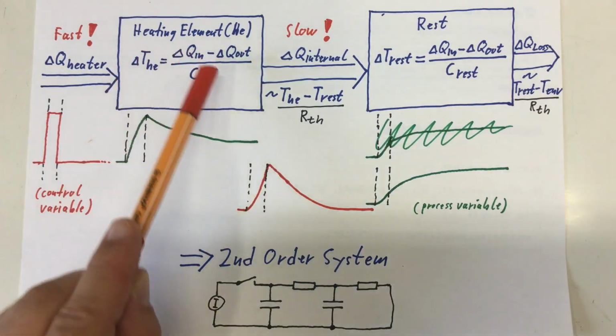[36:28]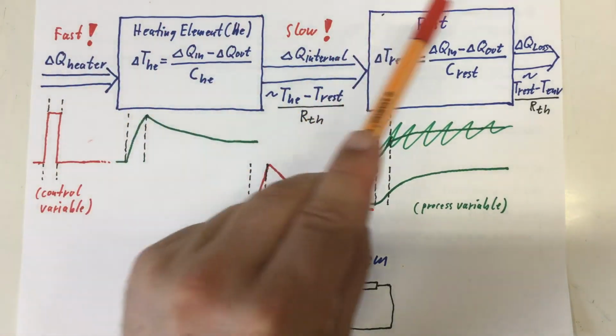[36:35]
I've drawn in one of our measurements the temperature of the heating element in red, and I traced the temperature of our rest in green just to give you a feel of the scale. So when we turn our heating element on, the temperature of the heating element shoots up, and it probably peaks somewhere off the screen at a few hundred degrees Celsius, and then as energy is exchanged, they come together again until they are in an equilibrium, and then everything cools down again. We lose energy to the environment. And we can have such high temperatures in our heating element, resulting in only a 20-30 degree temperature increase in our rest, because the thermal capacity of our heating element is of course much smaller than the thermal capacity of the rest.
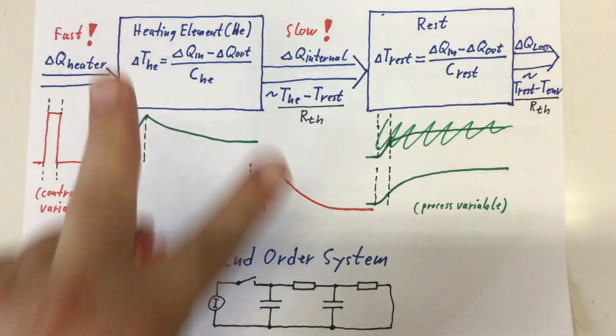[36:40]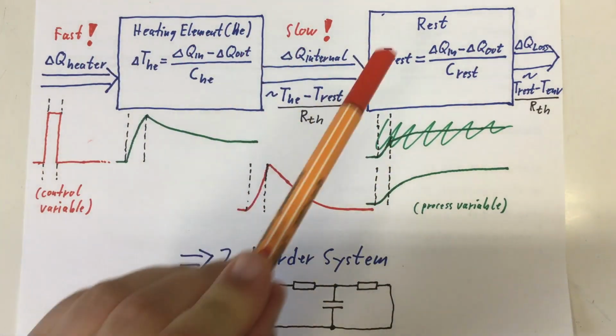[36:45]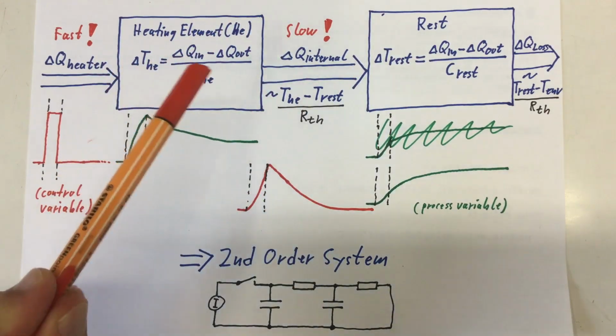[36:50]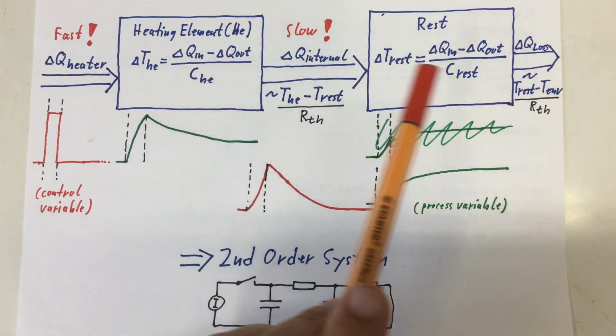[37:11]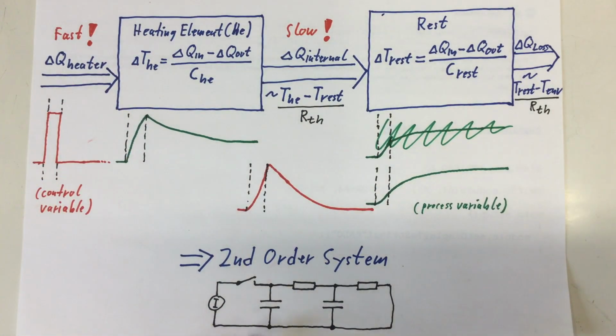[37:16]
Two closing notes. First, this is just a model of the thing, and it's not reality, and it's probably in certain aspects wrong. For example, I haven't modeled the lag time at all. Second, in control theory, this is called a second order system, because you have two energy stores in your system that exchange energy. And if we would draw that as an electronic circuit, as you're familiar with, our electrical power heating up the heating element would be a constant current source which we can switch on and off, and that would charge a first capacitor. And that capacitor, charged to a few hundred volts, would slowly charge the other capacitor, which would be much larger, to an obviously much lower voltage. And in addition, we have, of course, our losses here to the environment.
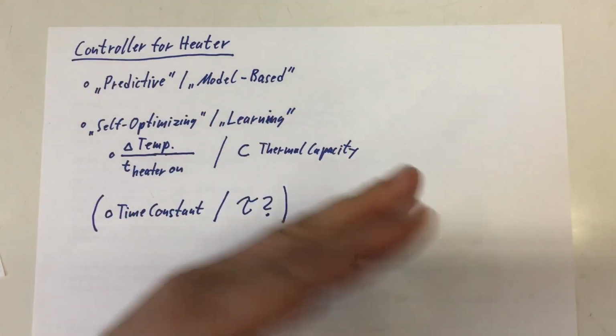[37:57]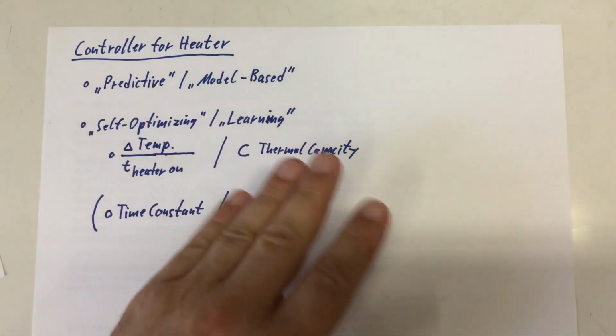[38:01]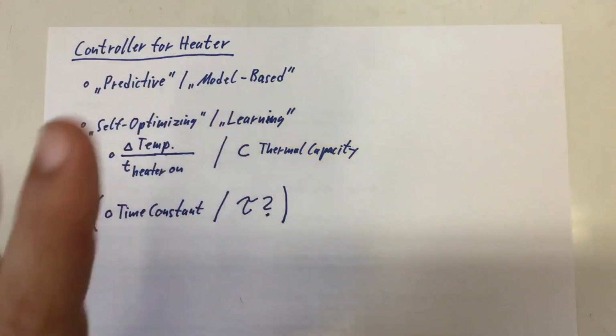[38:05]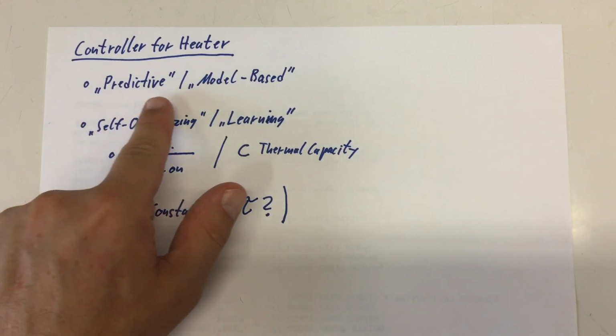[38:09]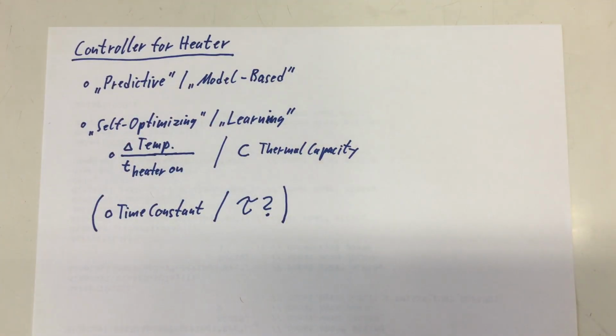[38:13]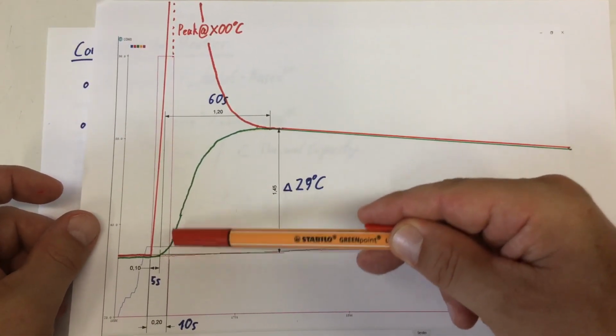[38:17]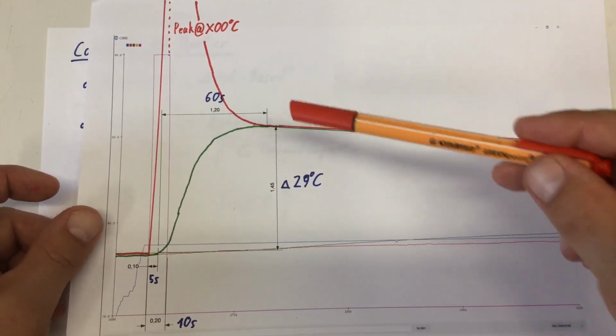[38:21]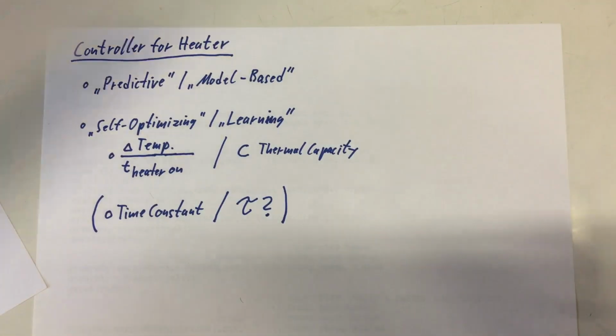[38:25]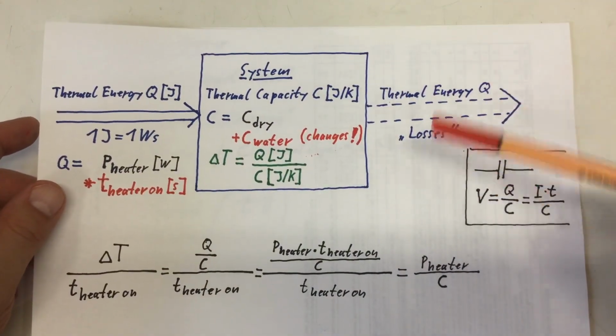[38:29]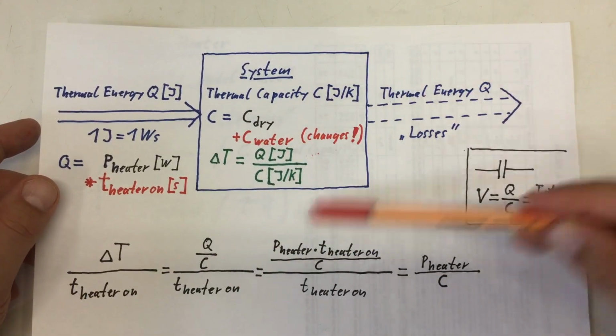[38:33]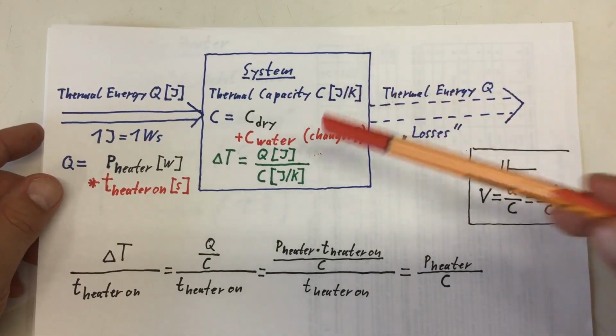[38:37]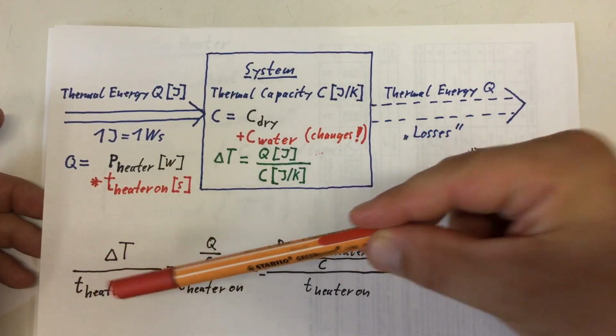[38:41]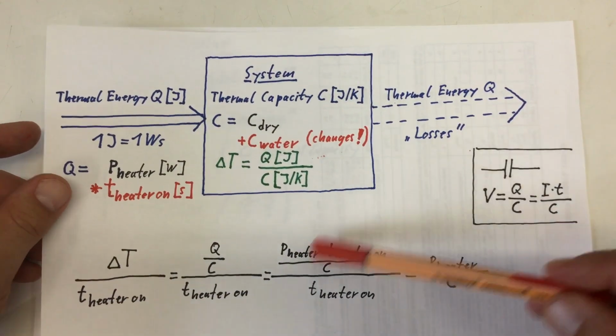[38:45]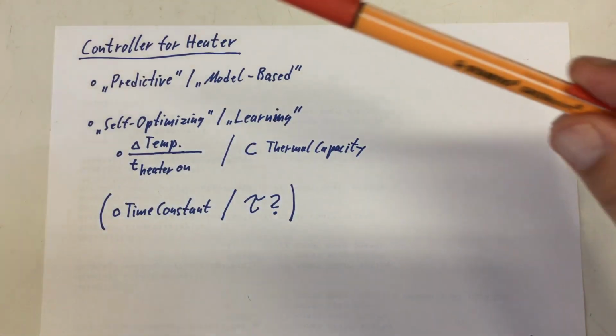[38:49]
Well, that was quite a lot to digest, but now we know what attributes our controller for the heater must have. First of all, it must be a predictive controller or model-based controller, so we can really know when we have to shut off the heater to reach a certain temperature. And fortunately enough, our model, just to predict the total temperature change, and not caring about in which curve it's reached, is quite simple. All we need to know is that delta T over T heater on variable, or the thermal capacity of our whole system. And that leads us to our second point.
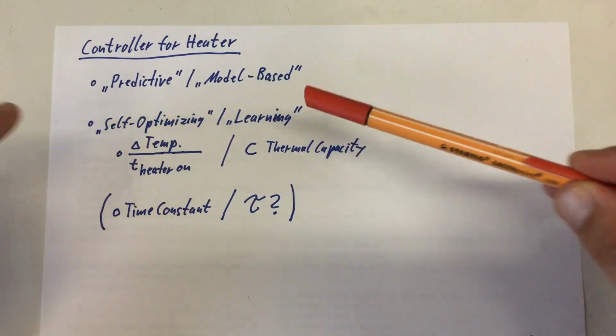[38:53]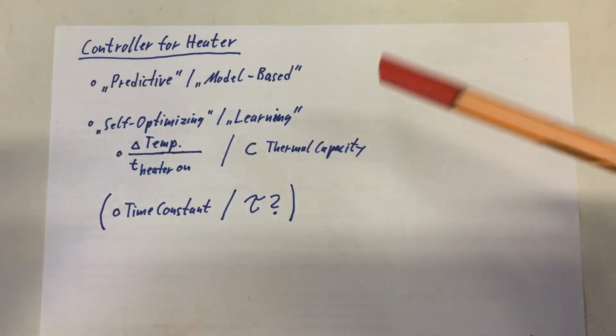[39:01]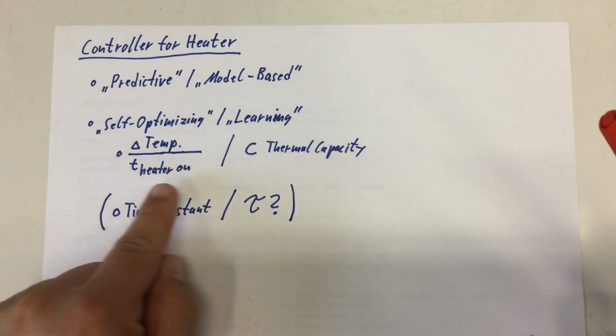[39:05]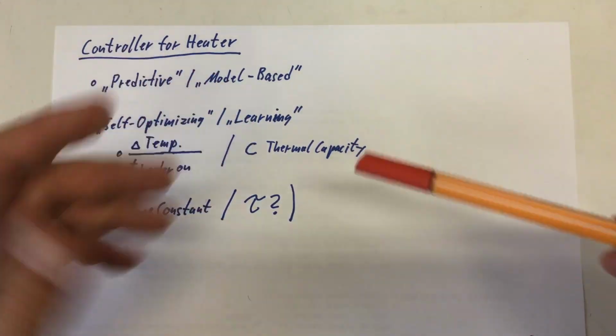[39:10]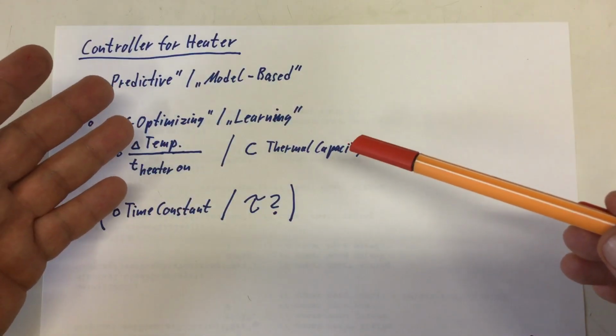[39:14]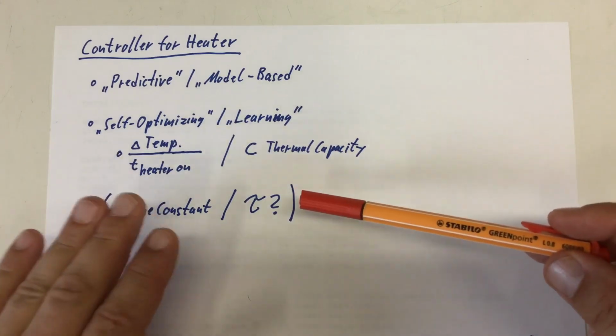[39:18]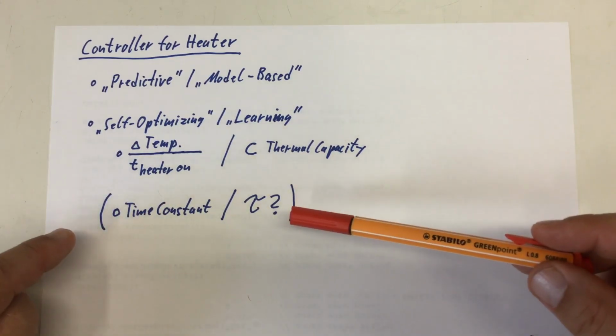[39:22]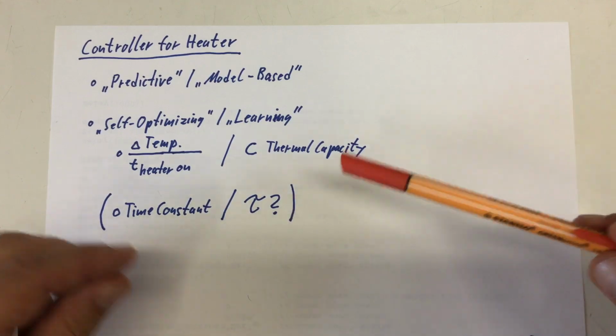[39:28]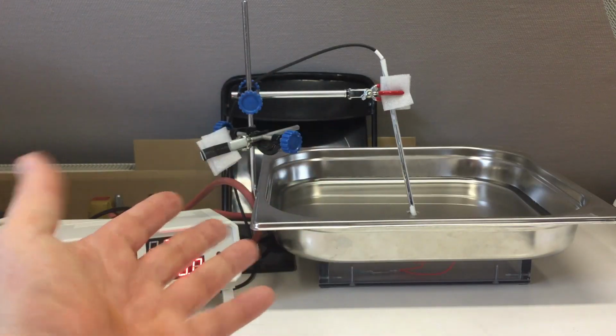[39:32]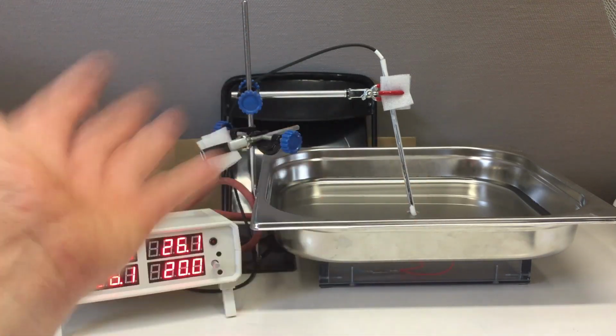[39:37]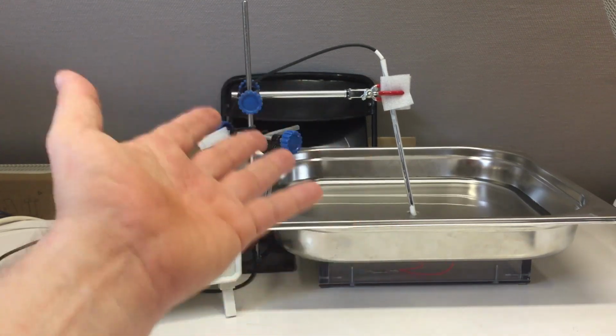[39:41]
Our controller must be self-optimizing/learning. It must, while it's running, determine what the delta temp per time heater on is, or the thermal capacity of the system, because you never know how much water or if any water is in it. And maybe, but that's totally optional, we can also learn about the time constant of our system. But as I said, I'm not really sure if that's a time constant in the classical sense. But that's definitely something for the next chapter in the software book of my laboratory water bath saga.